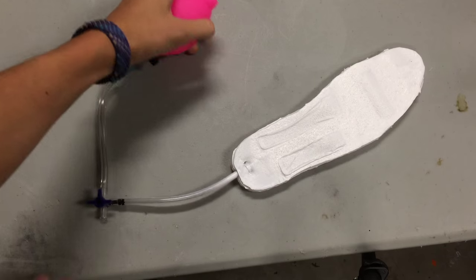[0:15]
If you watch my videos, then you know that I do a lot with soft robotics. Mostly different types of actuators and whatnot. Today, though, I have a different project that's more of an application of soft robotics. I present the soft robotic insole.
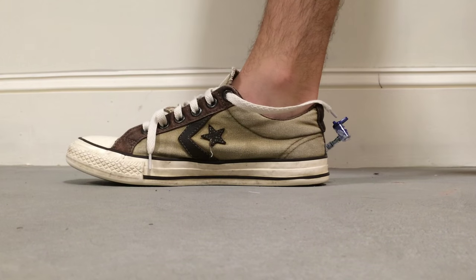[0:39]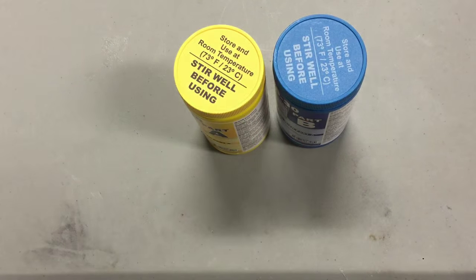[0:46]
The concept for this is simple. By using air and a flexible material, like EcoFlex in this case, you get a super soft insole that provides support around the foot when inflated. Now, this is by no means very practical, but it's a good representation of the applications of soft robotics. But I have been wearing them in my shoes for the past few weeks, and let's just say they're very comfortable.
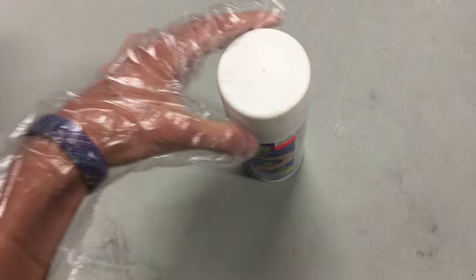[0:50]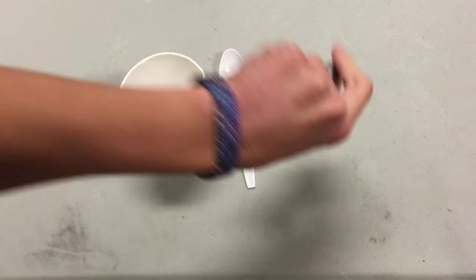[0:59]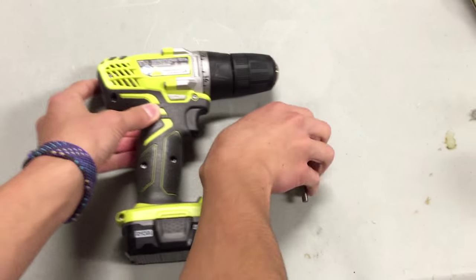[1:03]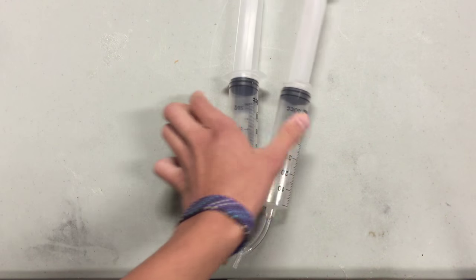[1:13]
Let's dive in. You'll need one zip tie, EcoFlex 30 silicone, some 1/8 inch tubing, a can of Plasti Dip, either a one-way valve or a three-way manual valve, and a shoe to install the insole in, or two if you want to make two. You'll need a cup, spoon, scoop for mixing silicone, and a drill with a 5/16 inch bit, a small flathead screwdriver, and a pair of scissors or flush snips, and some way to supply air. This can be a syringe, squeeze bulb, or air compressor, or whatever other system you have.
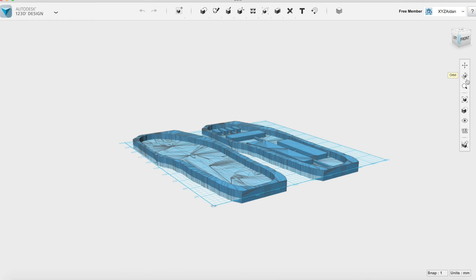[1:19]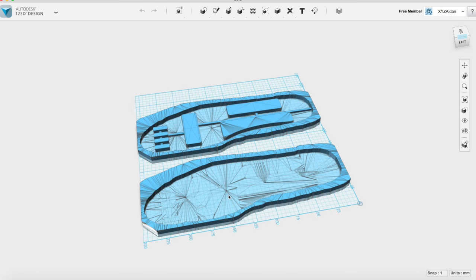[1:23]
Start off building it by modifying the design files to the size of the inside of your shoe. To figure out how to scale it, measure the width and length of your existing shoe insoles from the middle. Add 11 millimeters to both numbers. Use the non-uniform scaling tool in 123D to get both molds to be those dimensions. This will take some trial and error. Next, print those molds. I recommend 3 shells and 5% infill.
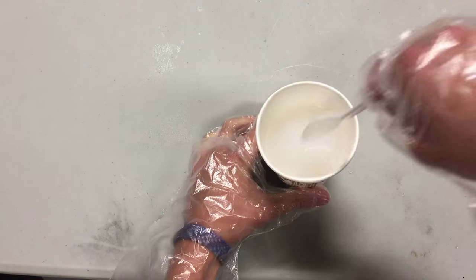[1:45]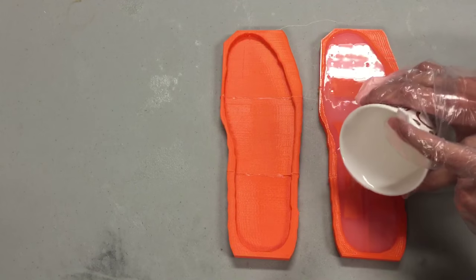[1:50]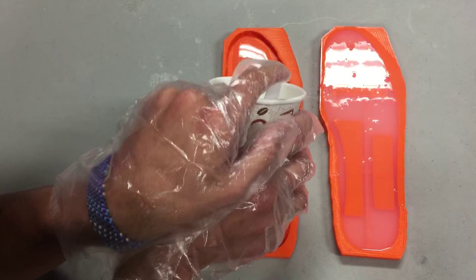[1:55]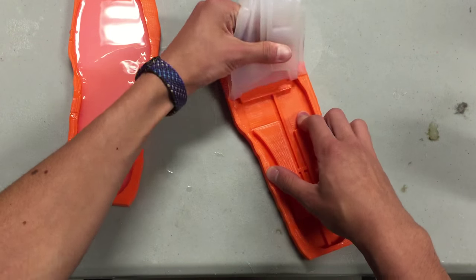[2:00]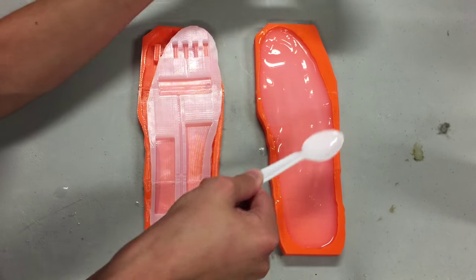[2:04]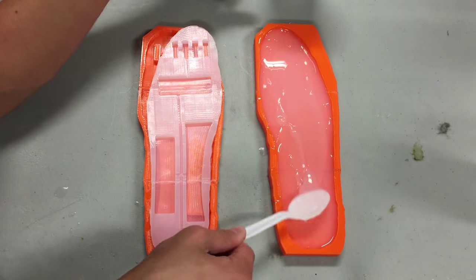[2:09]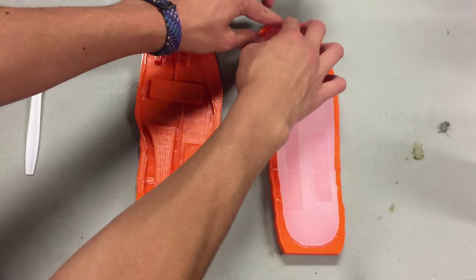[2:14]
Once they're printed, mix up a large amount of silicone and pour it into the molds. Fill the mold with the air channels all the way up, but only fill the other mold halfway. Let both cure for 4 hours. Carefully pull the cast out of the mold that you fully filled up. Then, mix up a small amount of silicone and spread that amount over the half-filled mold. This should only be about a millimeter high. Now, plop the cast that you just demolded onto that. Let that cure for another 4 hours.
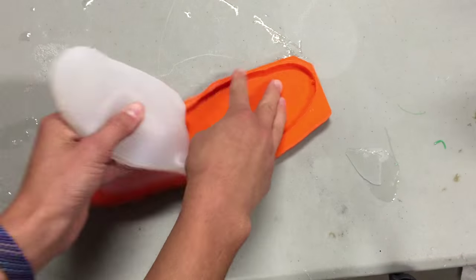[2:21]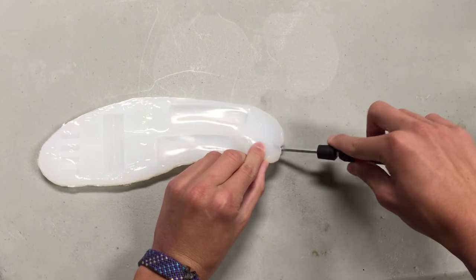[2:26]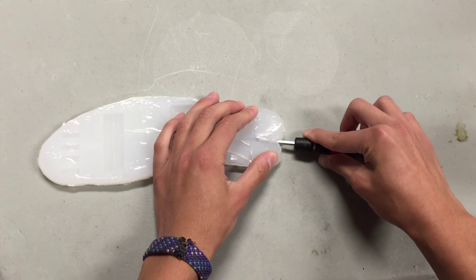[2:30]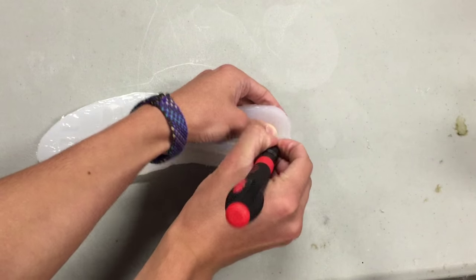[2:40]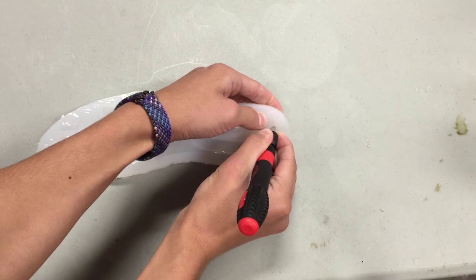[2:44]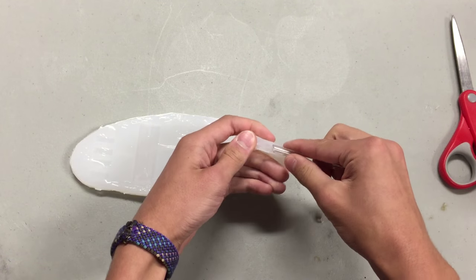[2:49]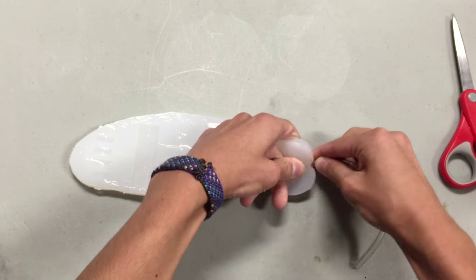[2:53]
Demold the whole insole now and trim any flash. Use the small flathead to open the opening in the back of the insole. This should open up the whole air chamber system. If any of the air channels are clogged, then you will unfortunately have to restart. But this has only happened to me once. Take the flathead and punch 2 slits on either side, about 5 millimeters from the central air channel that's in the insole. Insert the 1/8 inch tubing into the opening and make sure that about an inch of it is inside.
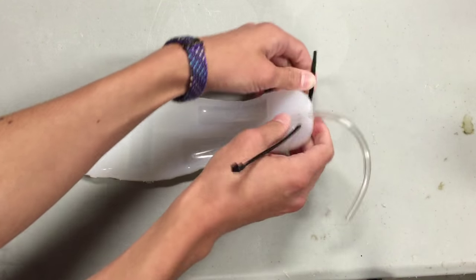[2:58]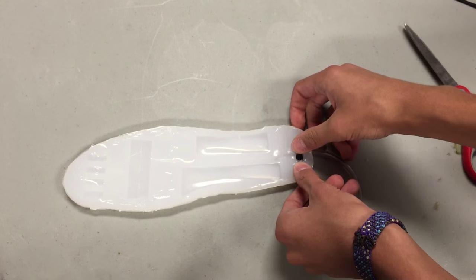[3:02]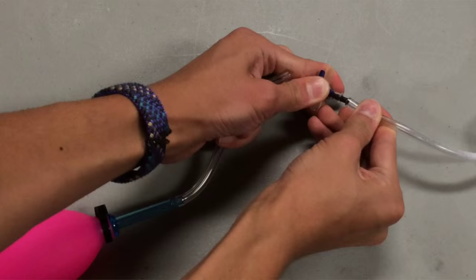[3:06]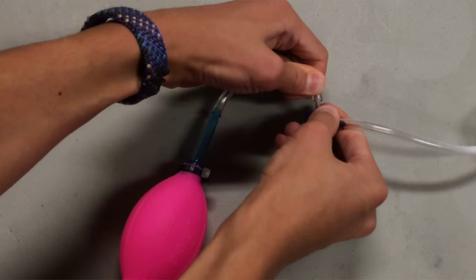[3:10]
Push the tail of the zip tie through each slit and tighten. Tuck the lock of the zip tie into one of the slits. Connect whichever valve you're using to the other end of the tubing. Time to test it now. Connect your air source to the input of the valve and inflate. If all goes well, the pocket should bulge. Keep it inflated and take your Plasti Dip and give the top of the insole a thick coating. Let it cure for about 30 minutes.
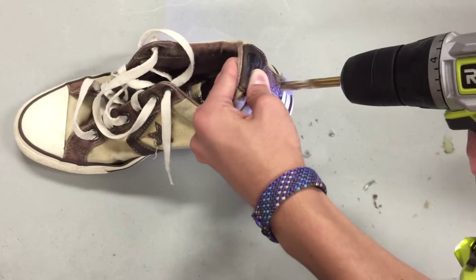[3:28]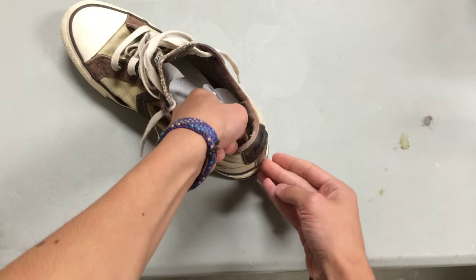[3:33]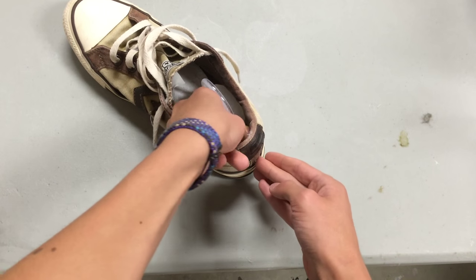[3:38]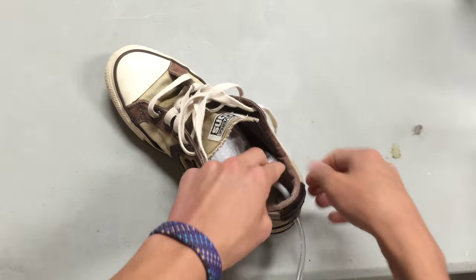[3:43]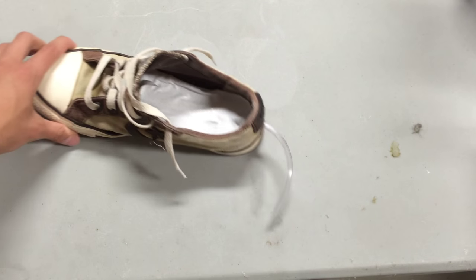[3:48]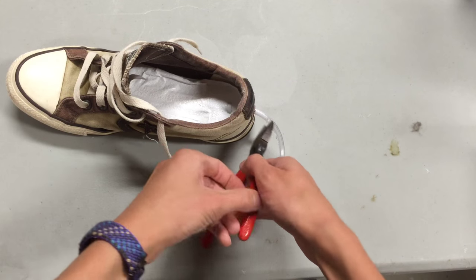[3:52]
Take the drill with the 5/16 inch bit and drill a hole in the back of the shoe. Now to put the insole into the shoe. Take off the valve and push the other end of the 1/8 inch tubing through the hole in the shoe from the inside. Tuck the whole insole into the shoe now. This may take some wiggling around to get this right. Trim the tubing if needed and reattach the valve. At this point, it's basically done. Put the shoe on, inflate it, try it out. Feels like walking on Jell-O.